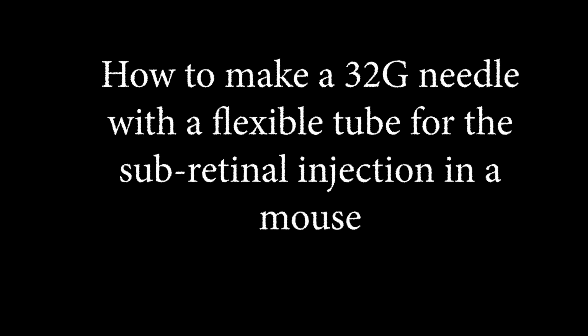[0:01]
This video describes a step-by-step procedure to make a needle for sub-retinal or sub-conjunctival injection into the mouse eye. Typically, for such injections, 1 to 2 microliters of fluid is delivered after making a very precise prick. It is difficult to hold commonly available microsyringes for making such a very precise prick, as they are quite bulky and often have a thick needle of around 22 gauge.
The thick needle can be utilized for rabbit or rat eye. However, it can cause retinal detachment and hemorrhage in mice eye. It is desirable to have a fine needle of at least 32 gauge connected to a flexible tube for making such a precise prick, and to deliver 1 to 2 microliters of the fluid.
The flexible tube allows the easy handling of the injection, as the heavy body of the other syringes often damage the cornea and exert pressure on the mice eye. Let's now see how to make such a needle.
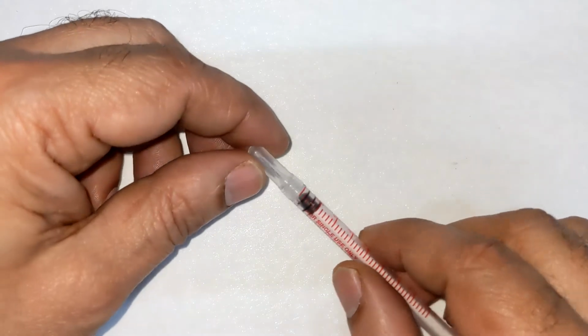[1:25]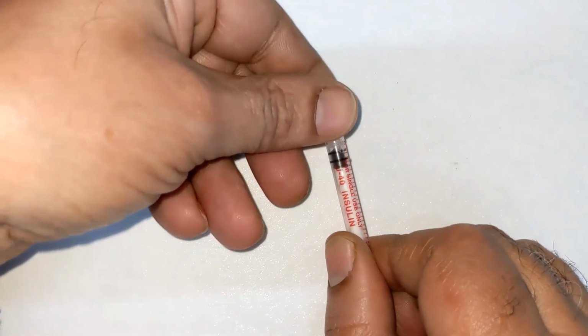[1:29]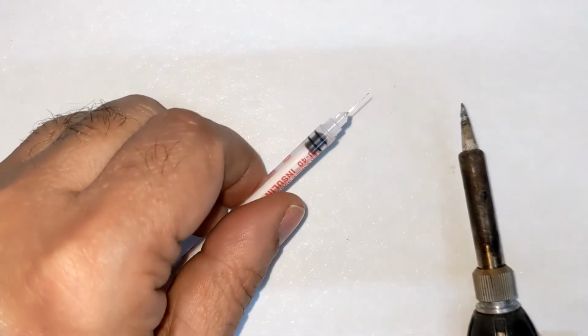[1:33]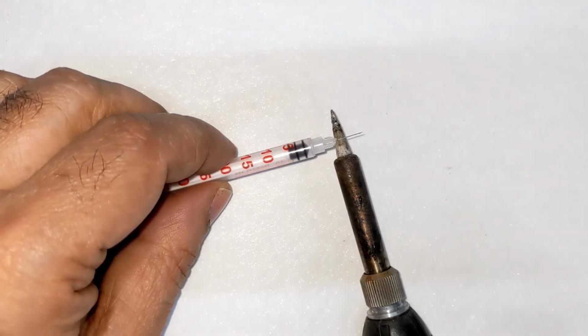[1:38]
We will utilize a 24 gauge IV cannula and a 1 ml insulin syringe fitted with a 32 gauge needle. Remove the cap of the insulin syringe to expose the needle. Heat the needle by touching a hot soldering iron at the middle, and after a second or two, gently pull the needle out using a forceps.
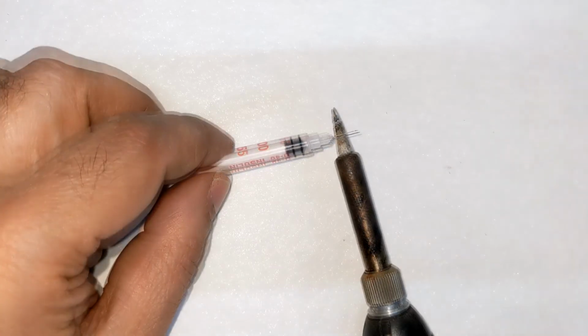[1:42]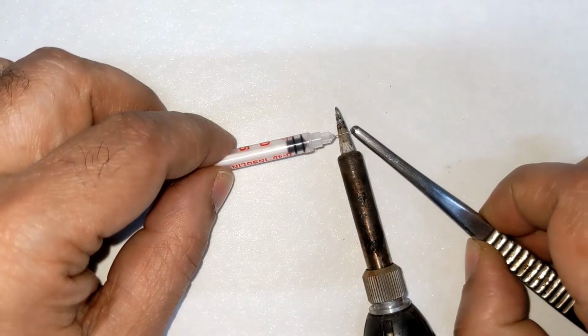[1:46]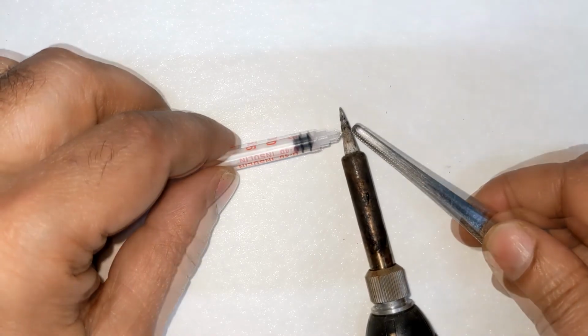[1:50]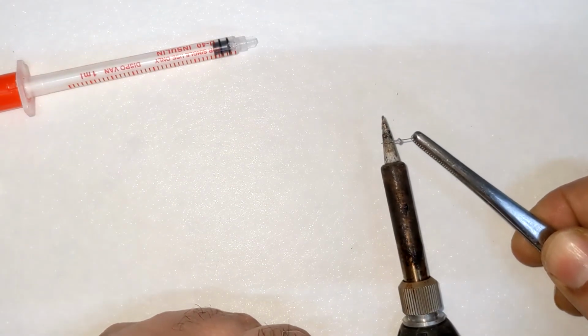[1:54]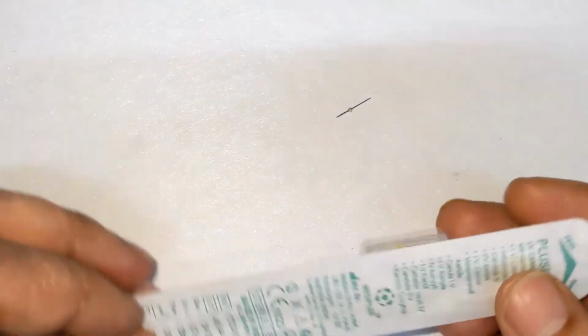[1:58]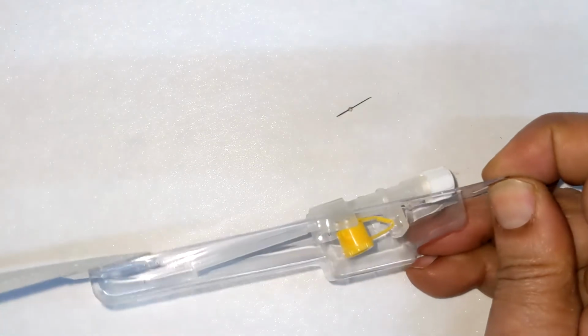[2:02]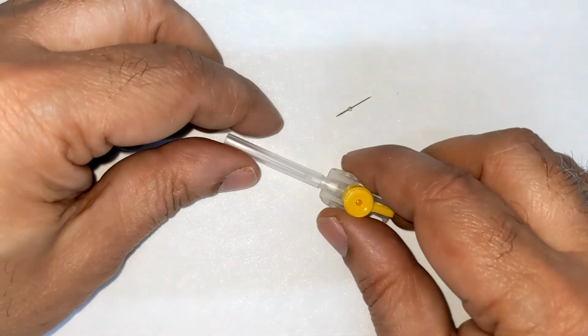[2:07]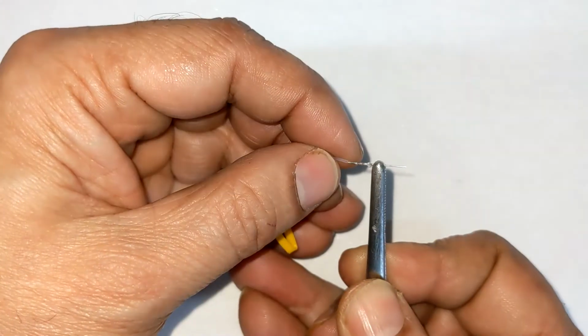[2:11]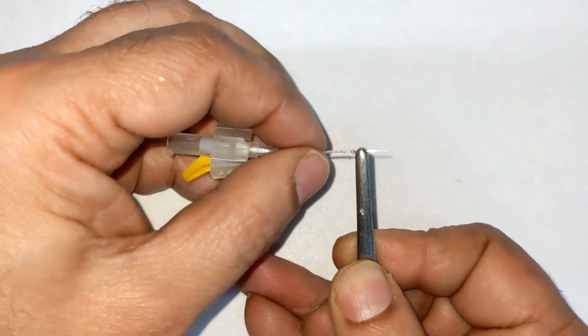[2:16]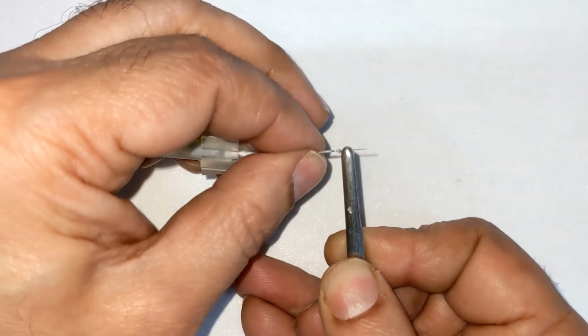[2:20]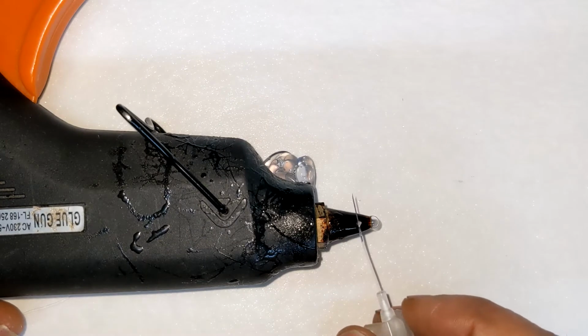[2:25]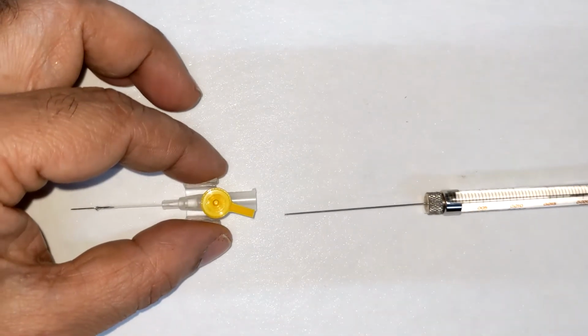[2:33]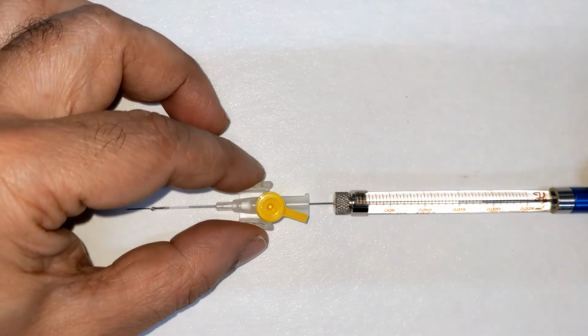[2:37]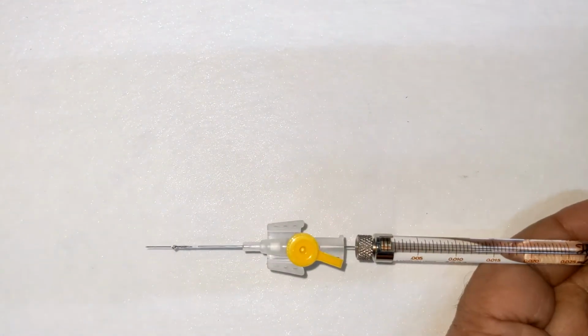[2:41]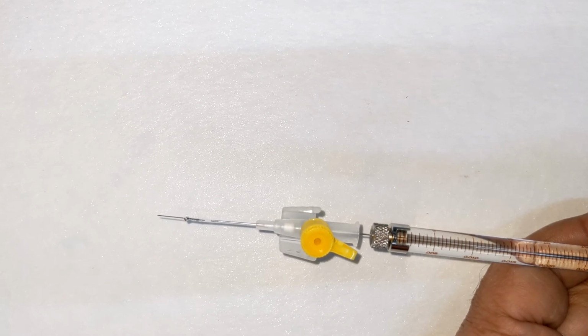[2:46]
To use this needle, gently place the needle of a conventional 10 or 25 microliter Hamilton syringe, typically used in HPLC, into the other end of the flexible tube. The 32 gauge needle with a flexible tube for delivering 1 to 2 microliters is ready to use.
Its applications are not limited to subretinal or subconjunctival injection. It has been used for aqueocentesis, vitrectomy, and aquaflushes in mice eye.